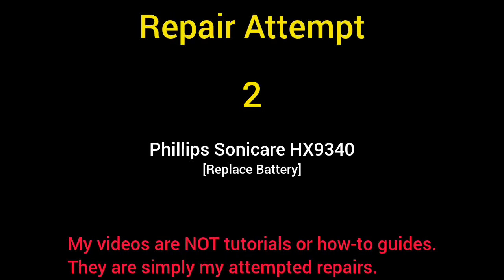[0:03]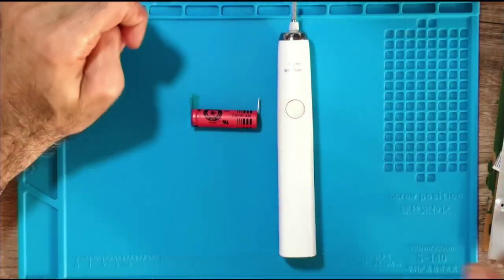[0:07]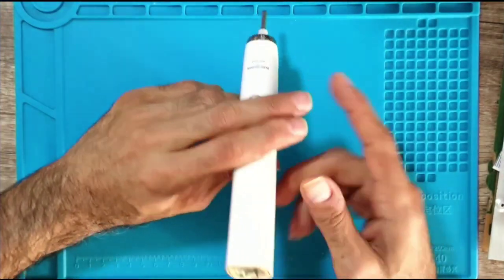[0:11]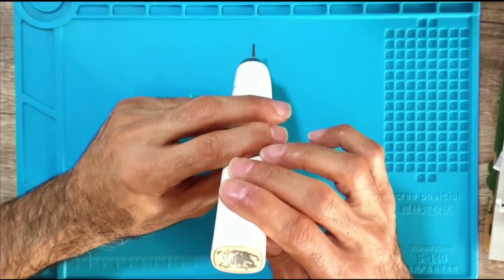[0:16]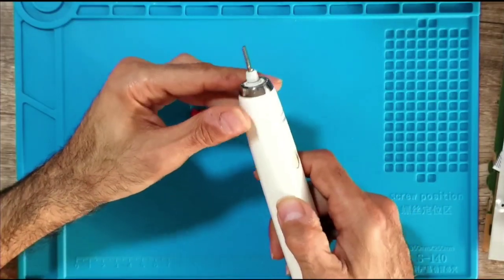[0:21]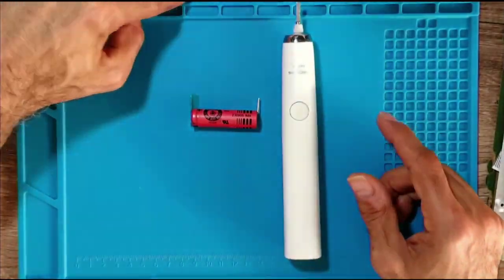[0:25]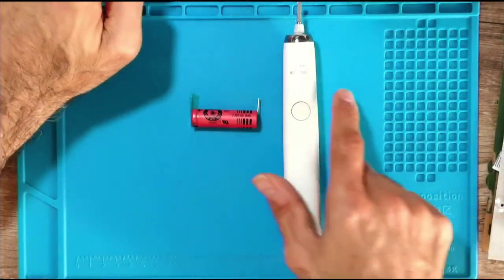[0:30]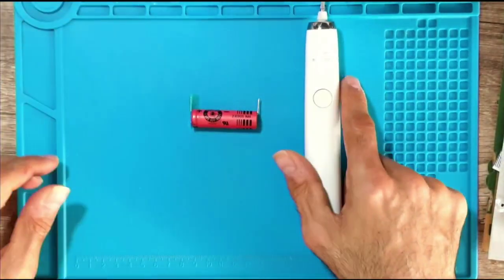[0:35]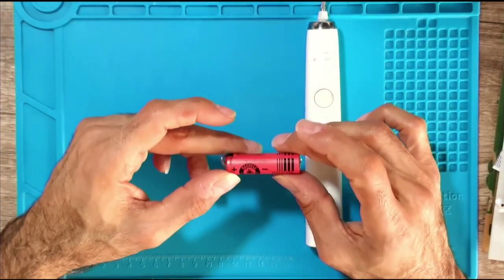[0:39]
I have a Phillips Sonicare model number HX9340, and it was given to me by a relative of mine. He said that in the past the battery would last about 4 weeks, and now it's down to 7 days to 10 days. So he purchased a new battery, and I'm going to replace it in this video.
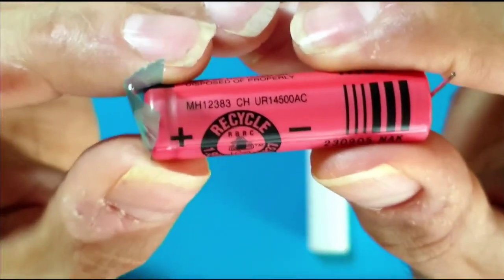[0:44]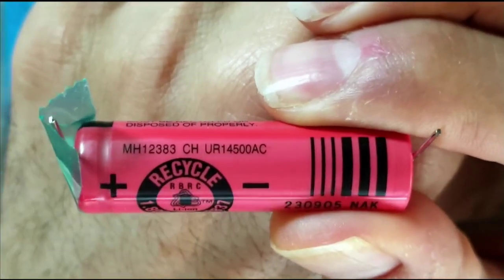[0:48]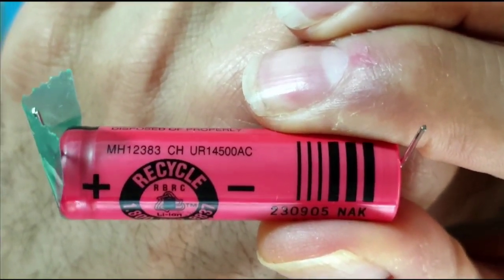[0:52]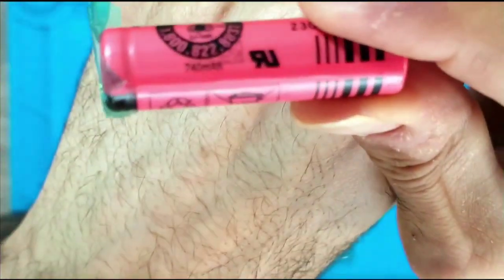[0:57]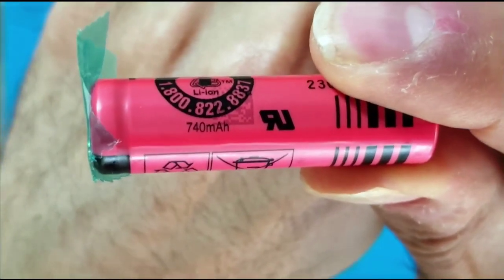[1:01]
This is the battery if anyone is interested. It's size 14500, and it's ~740 milliamp hour.
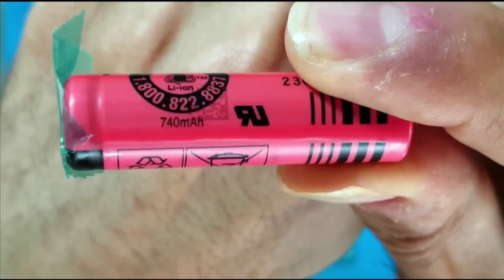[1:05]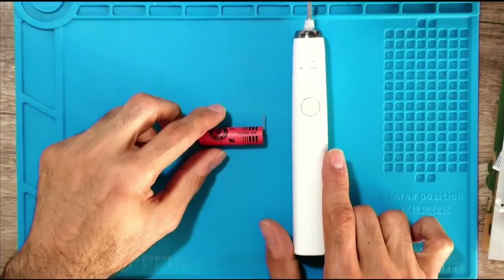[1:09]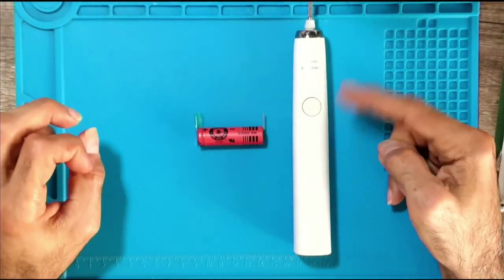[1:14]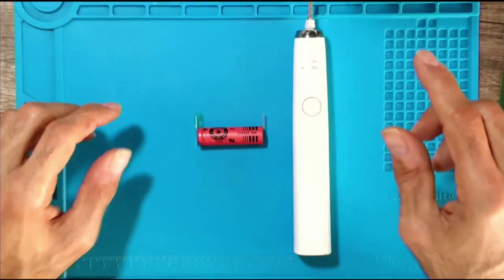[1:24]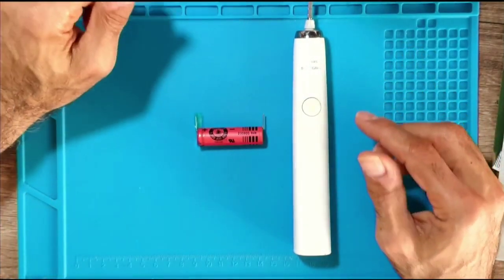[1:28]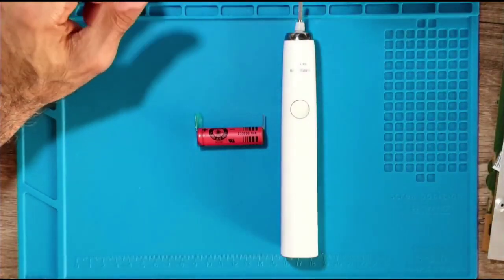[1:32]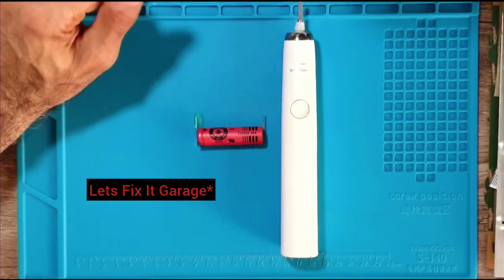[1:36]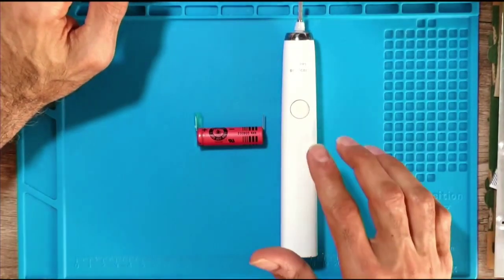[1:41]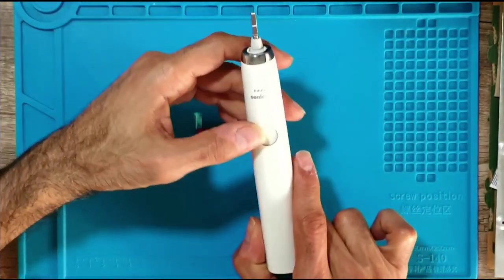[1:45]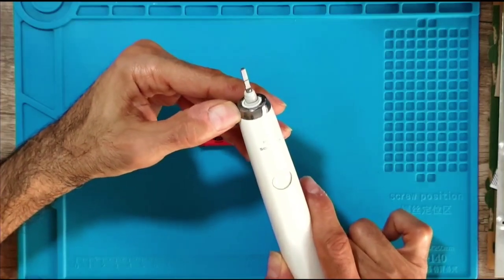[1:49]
Okay, to keep the video from becoming an hour long, I'm gonna open the toothbrush, remove the casing, and remove the motherboard. But I'll leave some links in the description to some very good channels that will help you with the opening process. There's a great channel called Let's Fix It Garage, and it has a wealth of information on Sonicare toothbrushes. If you're interested in doing any kind of maintenance or repairs, you should check it out. Like I said, I'll leave a link in the description.
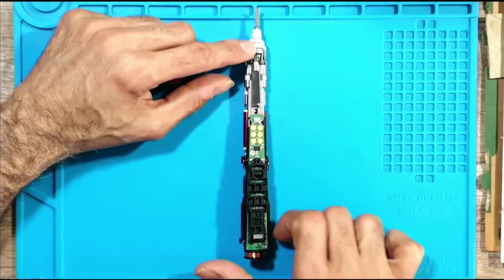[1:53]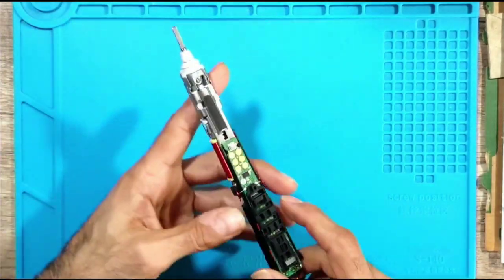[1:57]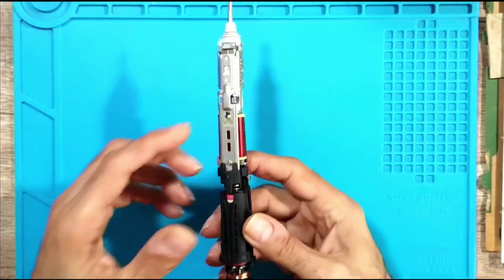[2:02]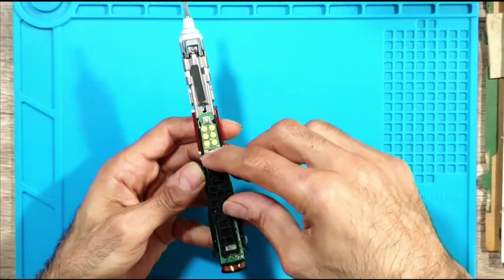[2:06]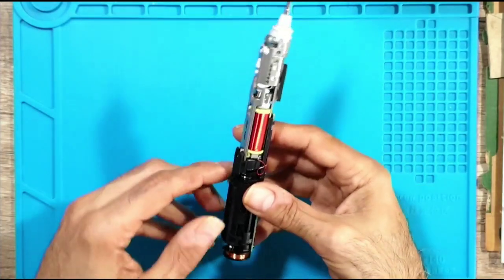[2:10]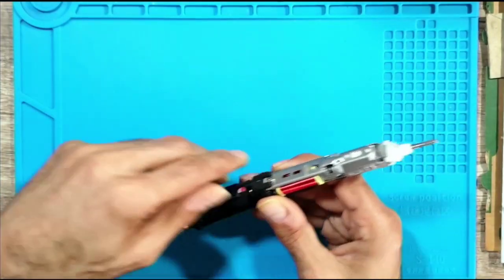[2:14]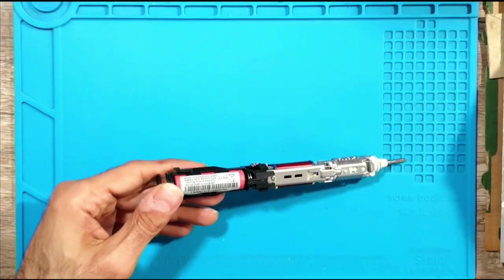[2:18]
So here we have the toothbrush. The board is here, this side, and on the other side there's the battery. So we're going to remove these two rubber, one on this side, one on the other side. There we go.
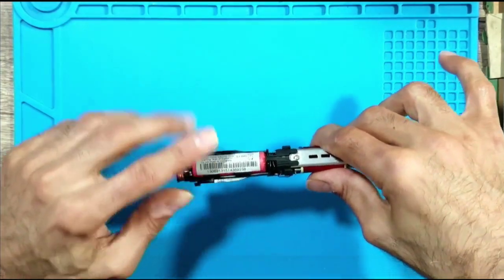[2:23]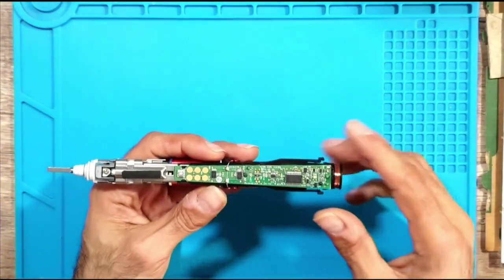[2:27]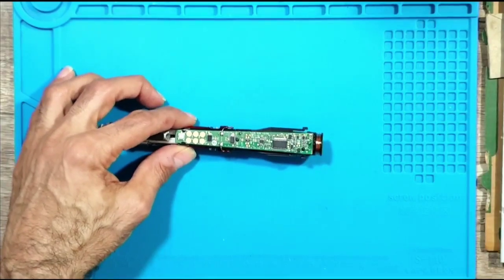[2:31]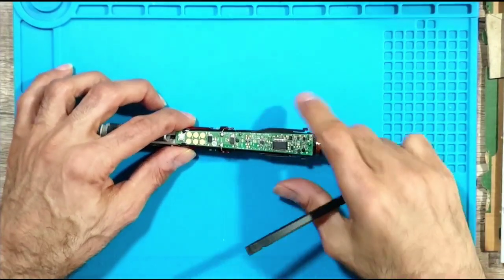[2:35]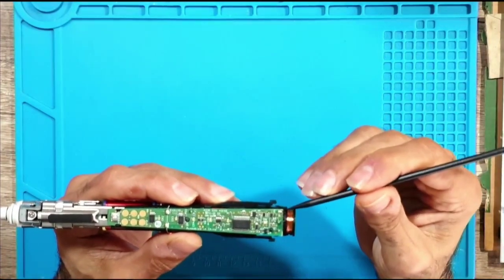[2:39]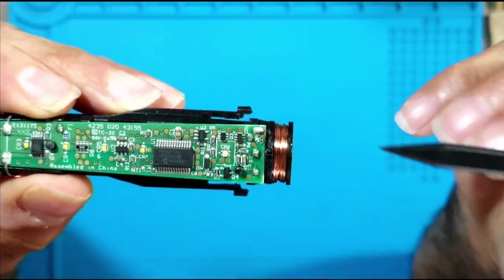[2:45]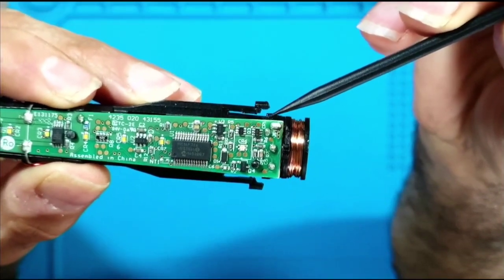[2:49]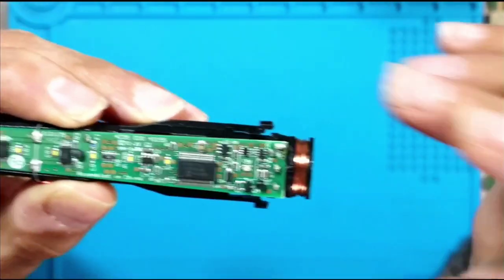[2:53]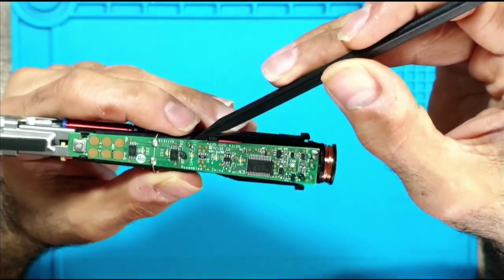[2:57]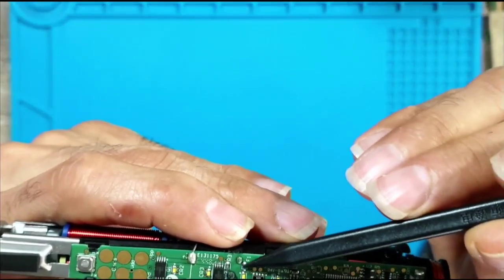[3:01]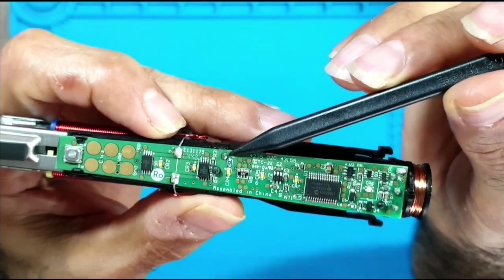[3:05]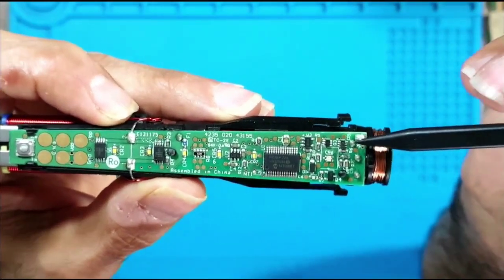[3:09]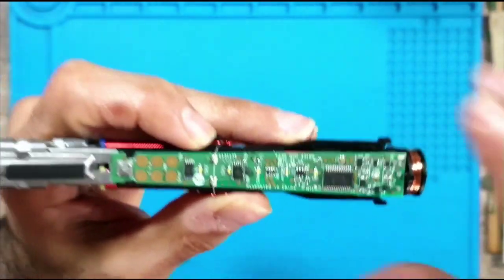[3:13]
Now the battery is soldered on the board, and there are 3 points that need to be desoldered. There's first this point here. This point here is like a switch. It disconnects the battery from the rest of the board. And then there are the battery terminals. One is here. I'll show you all this under the microscope, but for a bigger view, one is here and the other one is here. Okay, let me go under the microscope and we'll take a look at this.
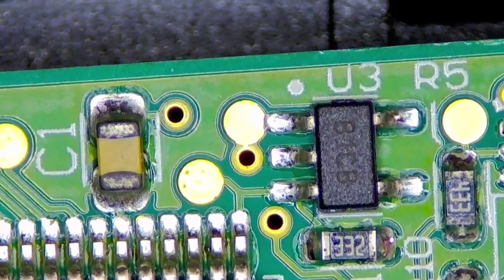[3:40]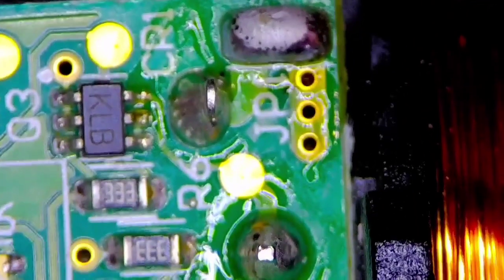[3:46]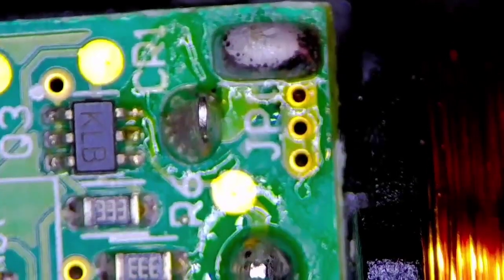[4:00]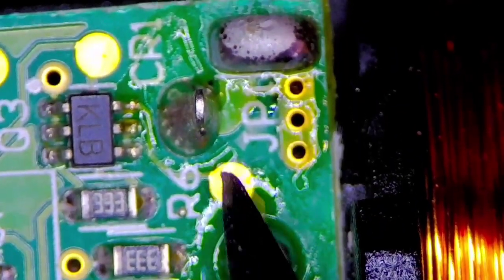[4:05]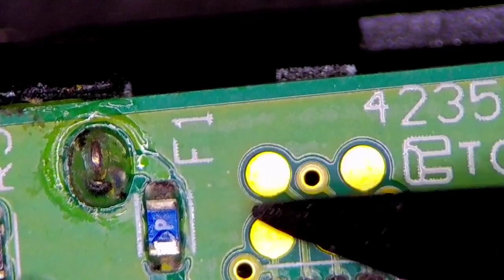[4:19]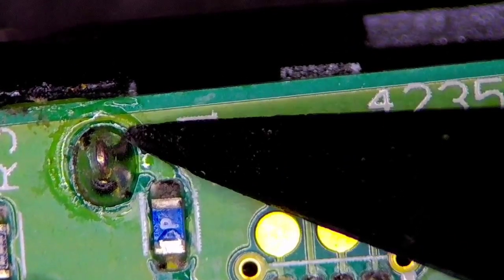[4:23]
Let me raise the microscope like this. There we go. So the first point I mentioned is here. It's JP1, jumper one. There are two pads, and when you remove the solder here, you disconnect the battery from the board. And then this here is one terminal of the battery, and the other one is, I'm gonna shift the toothbrush left. The other one is right here, right next to this fuse, the F1 fuse.
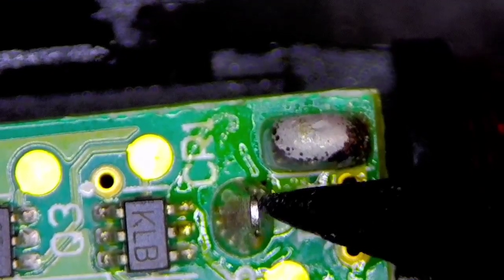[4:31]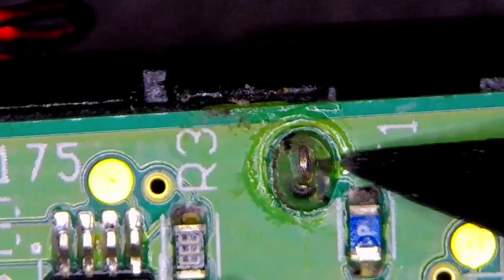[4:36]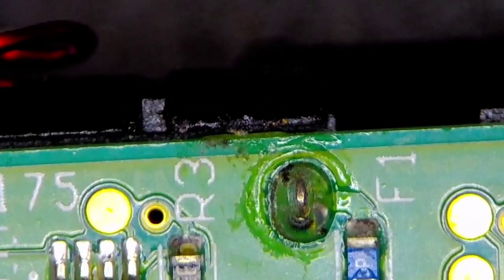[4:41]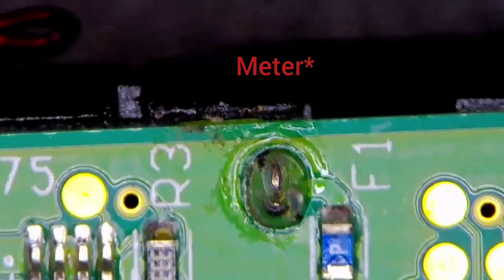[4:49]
So the first step is to desolder this jumper, and then this point and this point, so we can remove the battery and then replace it with the new one. I also recently acquired an internal battery resistance meter, so I'm going to run it through that and compare the old battery to the new one. Okay, so I'm going to start with desoldering this jumper.
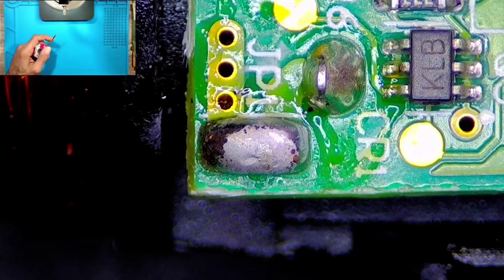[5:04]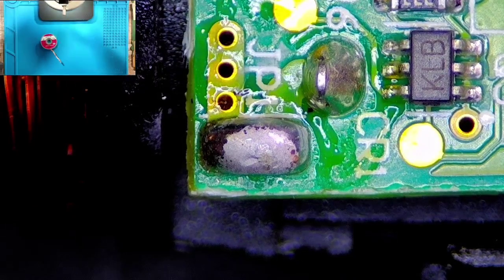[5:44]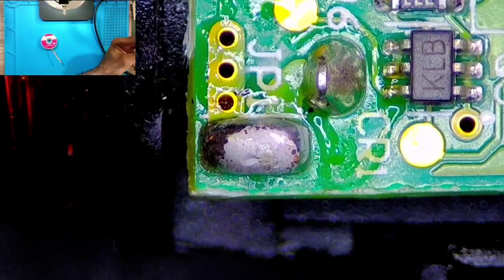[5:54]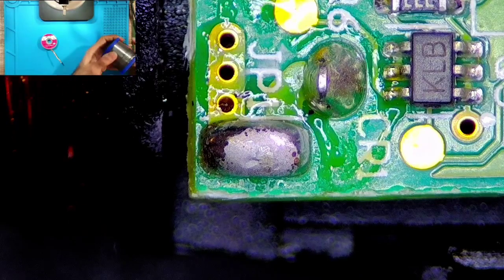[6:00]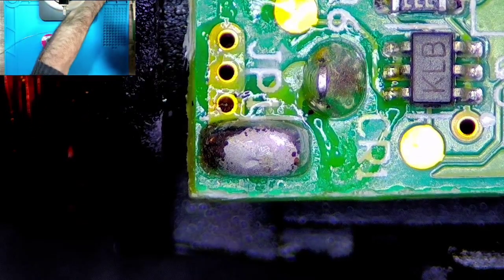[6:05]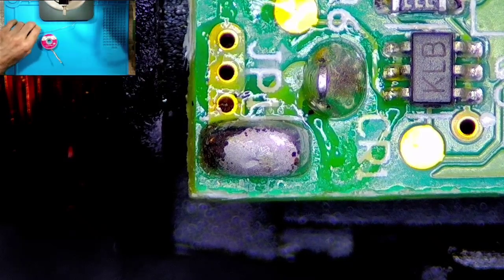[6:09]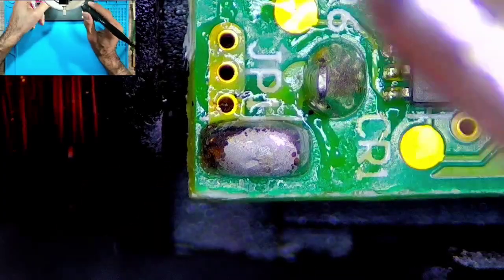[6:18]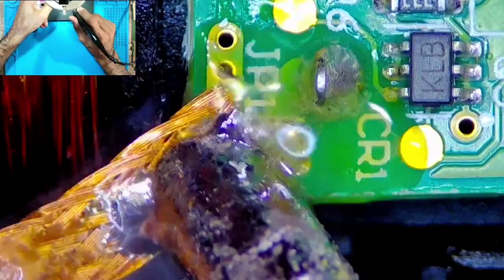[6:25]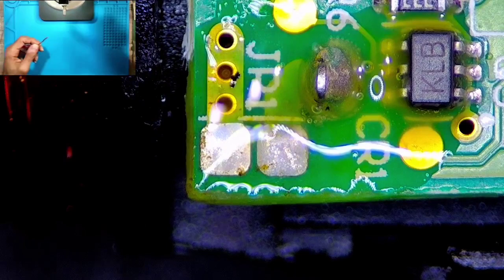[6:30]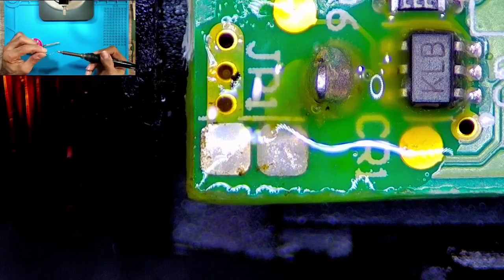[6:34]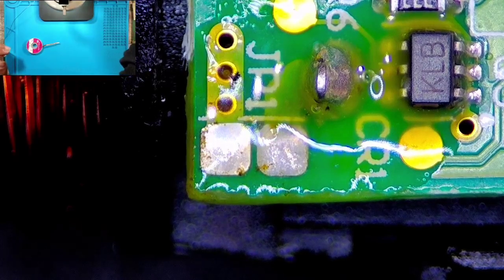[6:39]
Okay, so I'm going to use a bit of solder wick to clear that jumper. Let me put some flux on it. There we go. I think that's a bit too much, but that's okay. And I'm going to put my soldering iron to 330 degrees Celsius. Okay. Yeah, I think this is ready. Yep. Okay. So let's remove this blob here. There we go, that did it. Let me do a quick cleanup while the board is still hot.
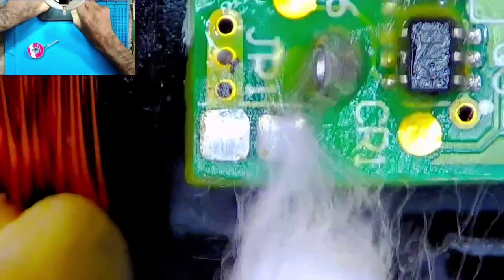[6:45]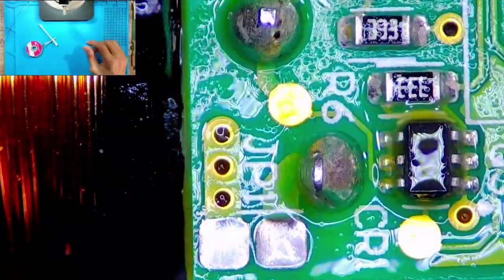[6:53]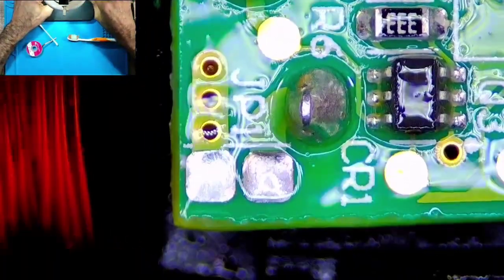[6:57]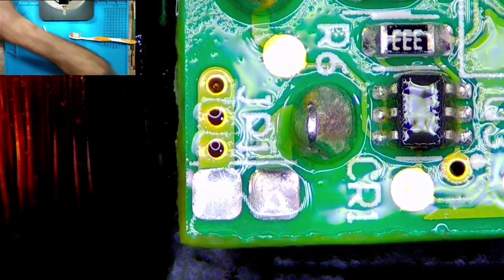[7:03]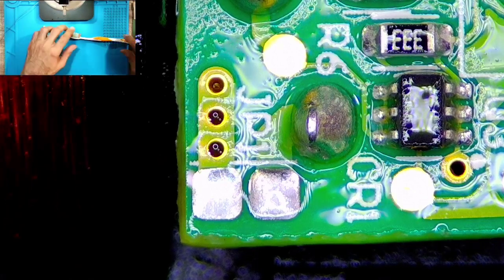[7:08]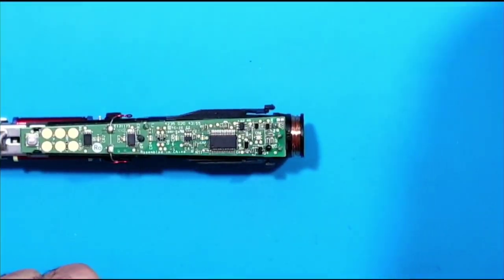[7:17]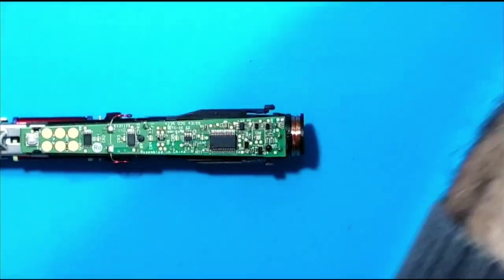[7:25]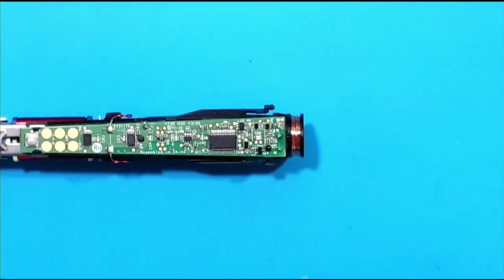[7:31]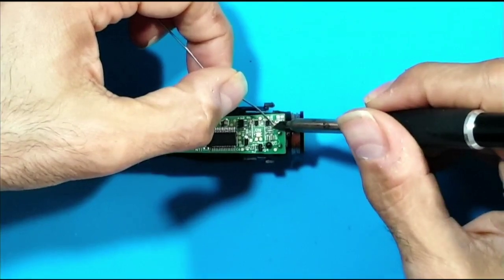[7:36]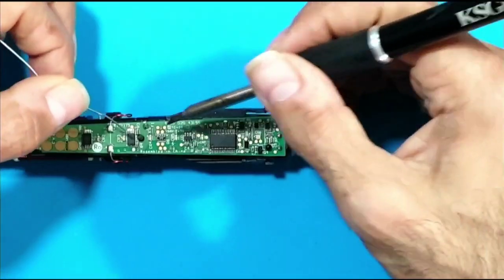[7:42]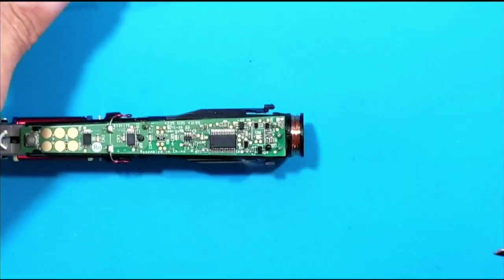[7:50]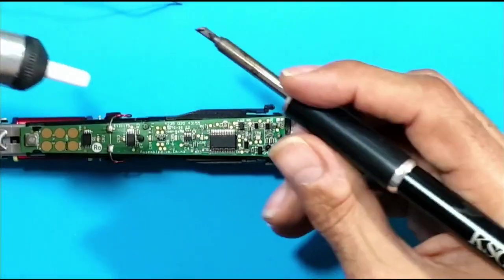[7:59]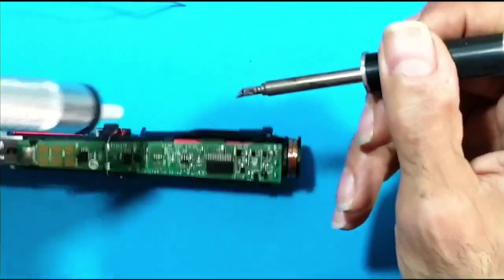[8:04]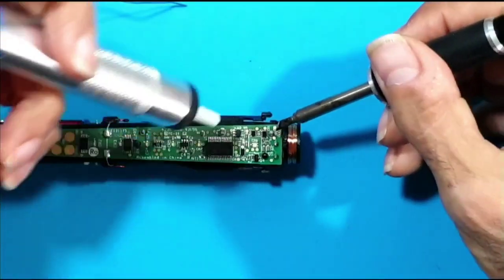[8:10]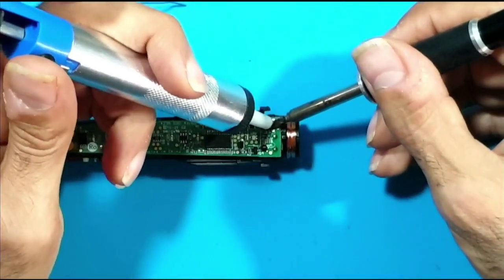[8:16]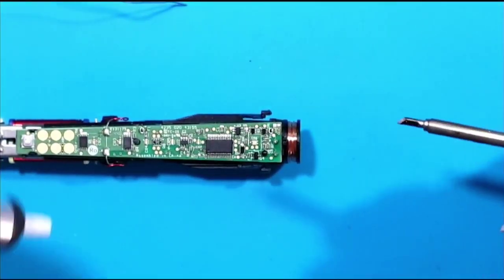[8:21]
Okay, so in the next step, I'm going to use the soldering pump. So I can't do that under the microscope. I don't have enough clearance. So I'll switch to the other camera. I'm going to start by adding a bit of fresh leaded solder on both terminals. There we go. That's one. That's the other one. Okay, that's looking good.
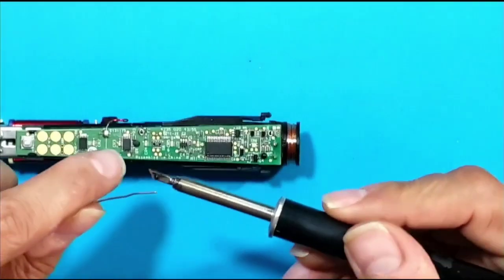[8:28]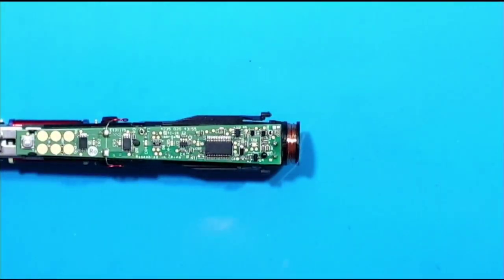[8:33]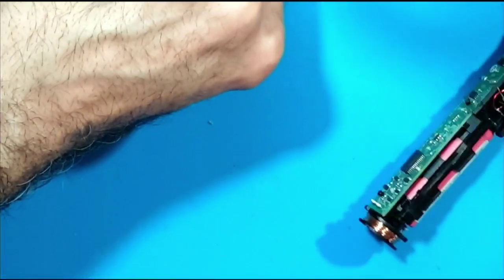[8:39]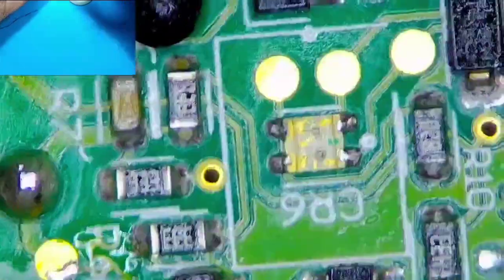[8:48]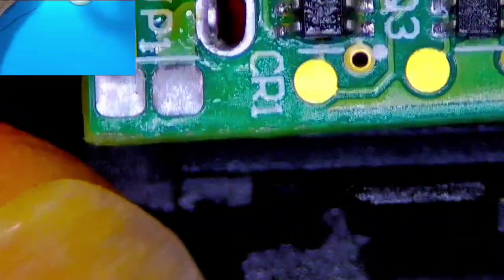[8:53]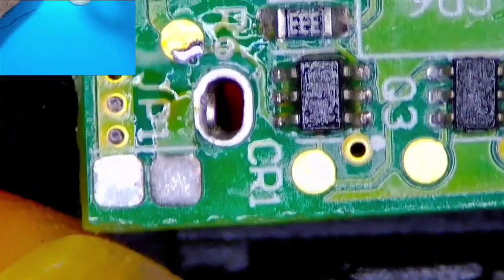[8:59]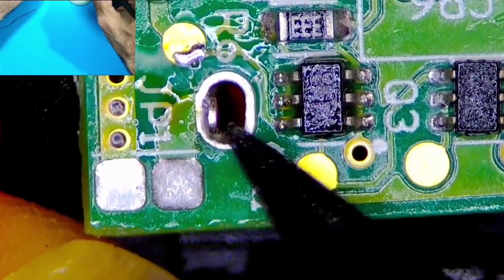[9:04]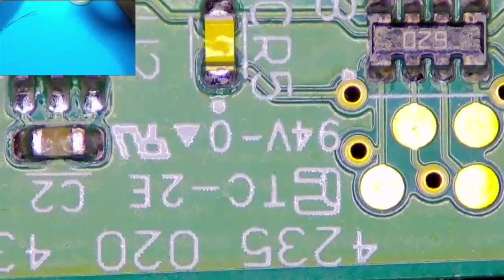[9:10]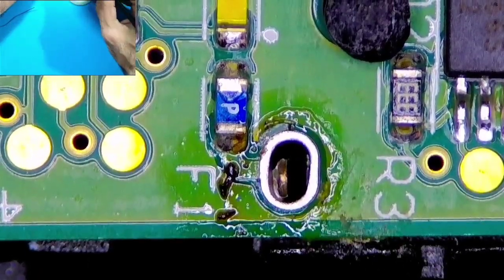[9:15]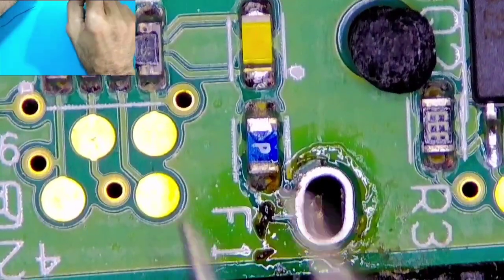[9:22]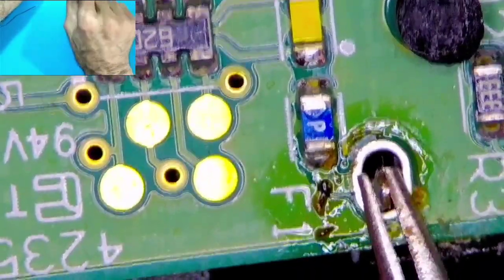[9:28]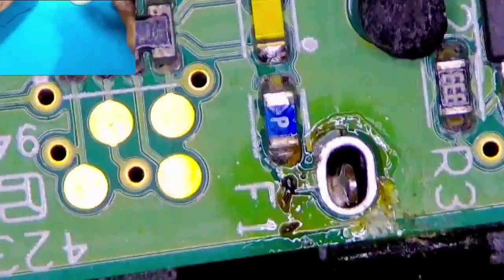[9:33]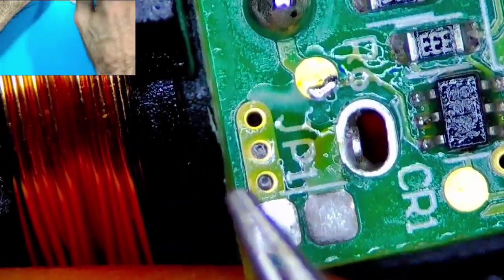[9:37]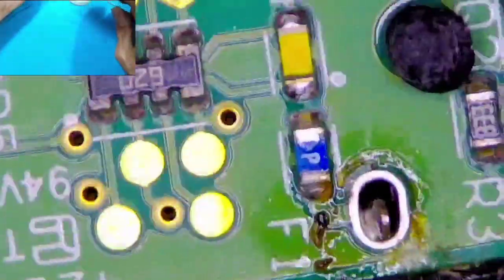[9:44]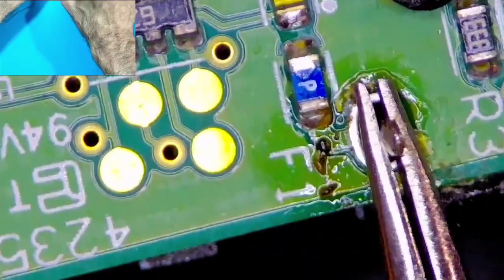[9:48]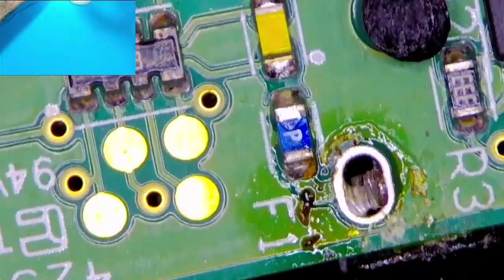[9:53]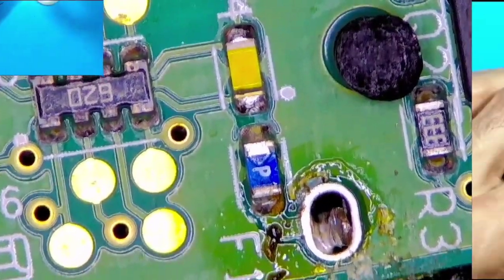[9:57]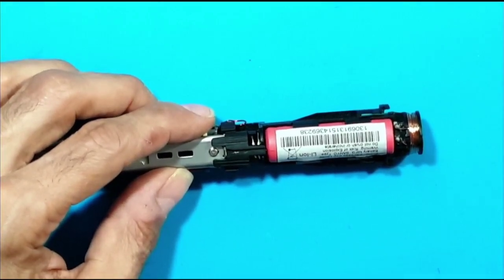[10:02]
Let me show you under the microscope. Bring the microscope in. So this here is the jumper that we cleared. This is one pin of the battery. And where's the other one? And here's the other end. Let me just see if they're loose enough. I think that's loose enough. Let me check the other one. Yeah, this one is definitely loose. Let me just try and loosen this one a bit more. Yeah, I think that's loose. So now hopefully I can remove the battery. Okay, let's see here.
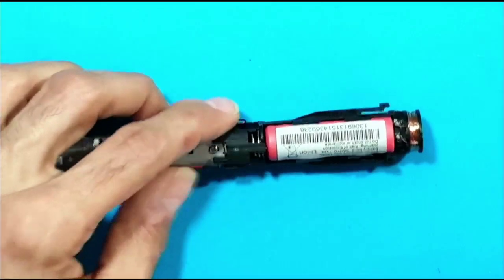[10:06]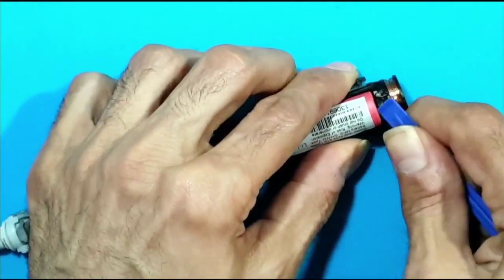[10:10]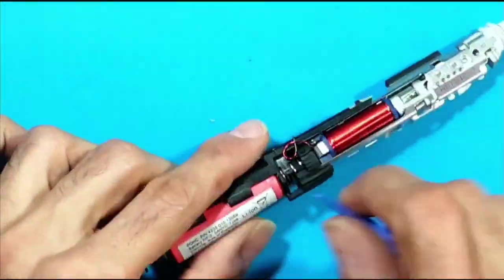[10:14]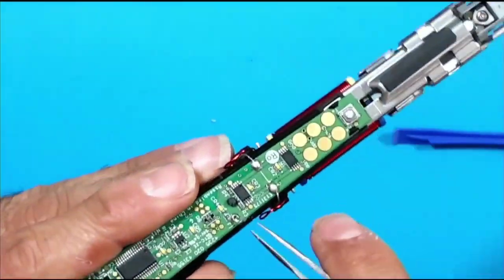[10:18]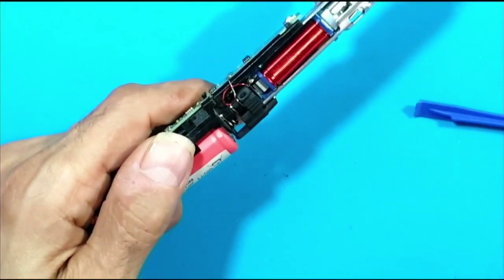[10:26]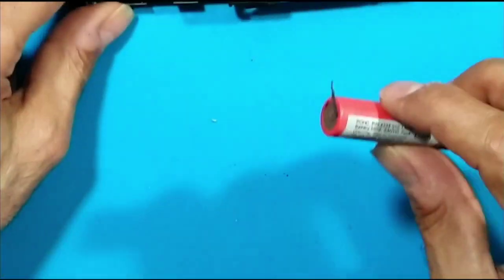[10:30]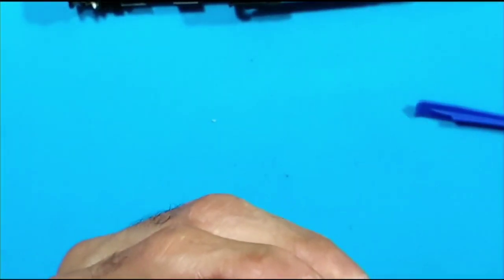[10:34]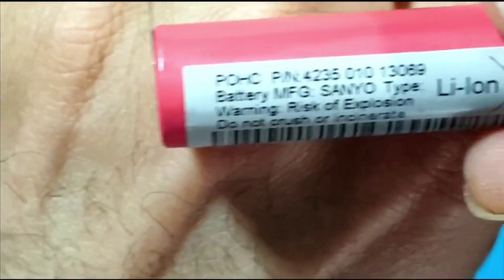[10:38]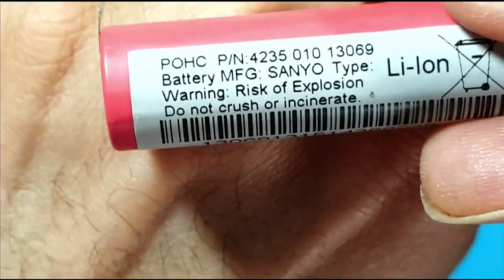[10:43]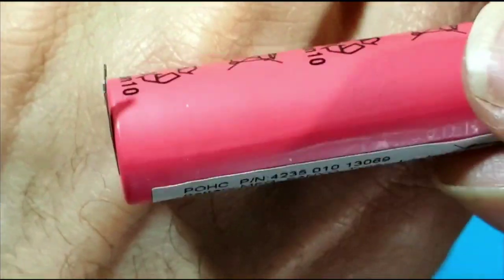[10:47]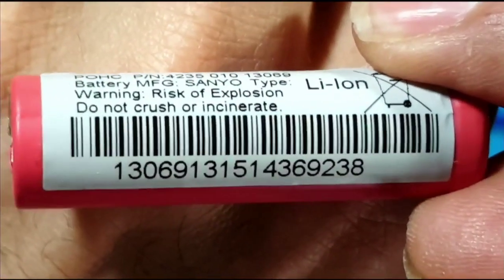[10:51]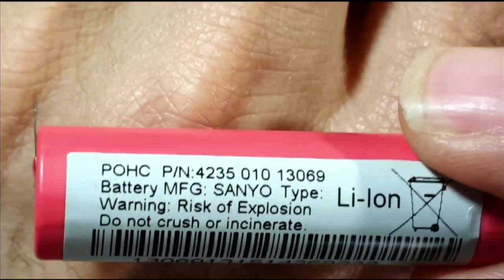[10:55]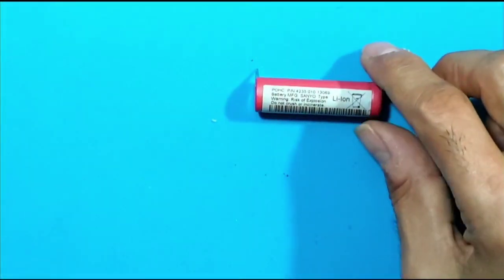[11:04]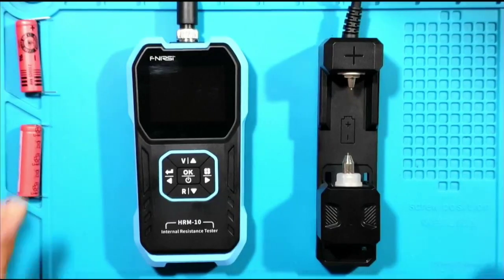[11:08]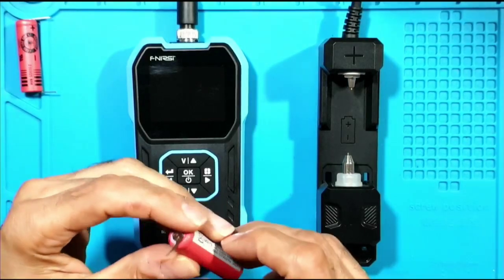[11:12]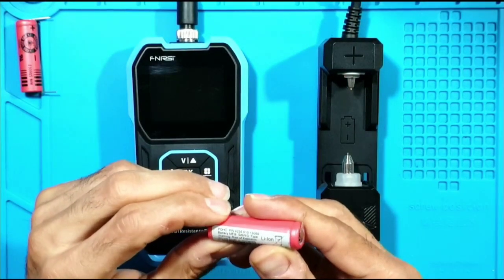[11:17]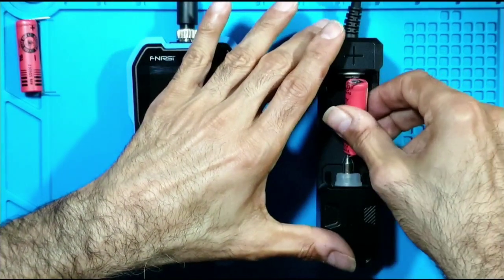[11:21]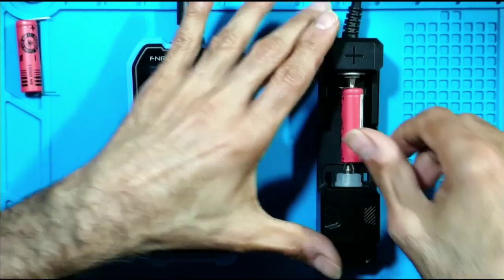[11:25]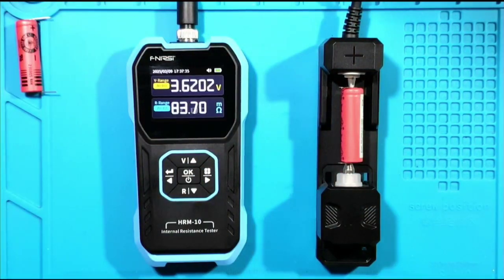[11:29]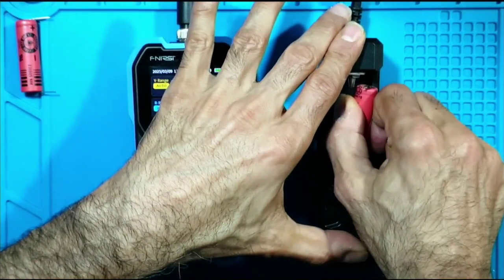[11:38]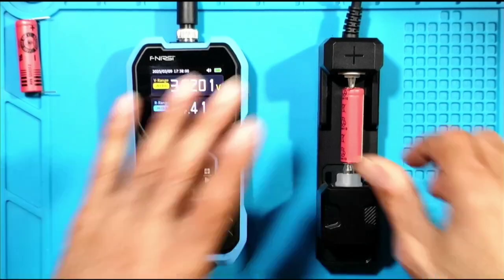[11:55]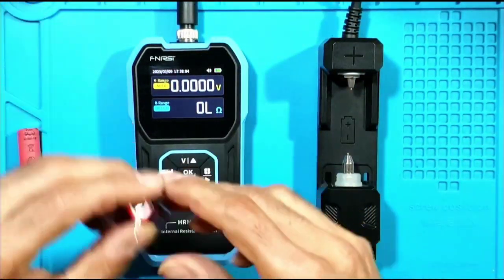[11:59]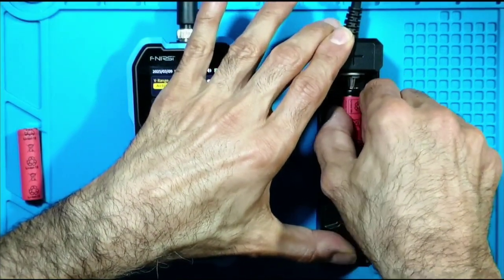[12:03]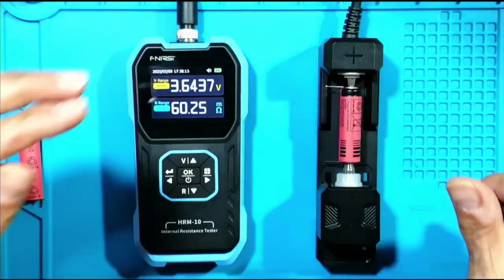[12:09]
Wait, I need to capture this screen. Okay, 84.3. Let me capture it. Okay. And then let's measure the other one. 84.4. And the new battery is 60. So I would say that's a reasonable difference. I think the 20 milliohm makes a difference here. Okay, let's proceed with installing the new battery.
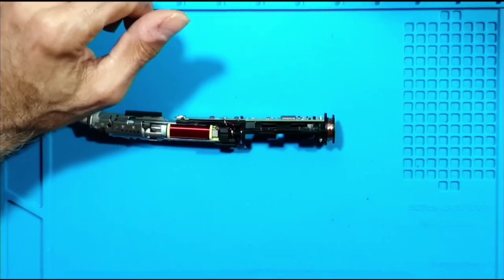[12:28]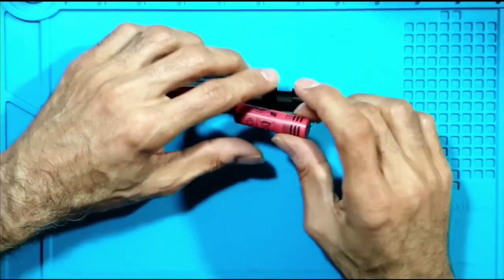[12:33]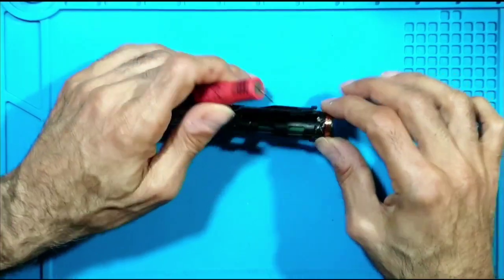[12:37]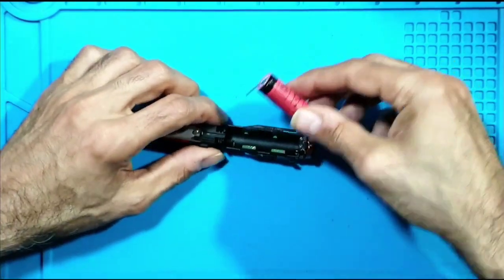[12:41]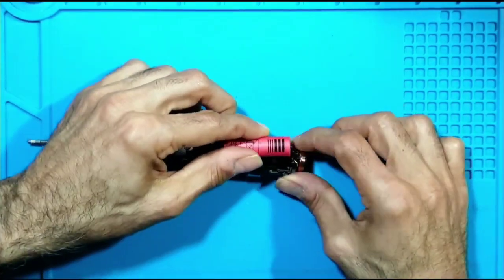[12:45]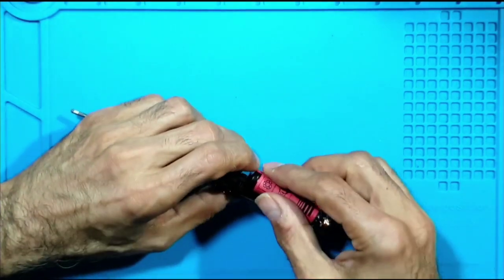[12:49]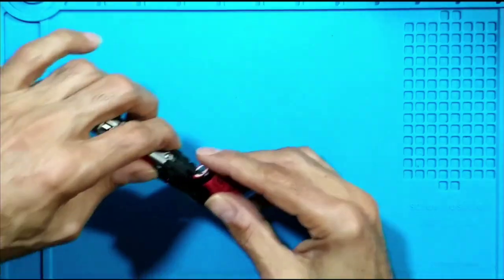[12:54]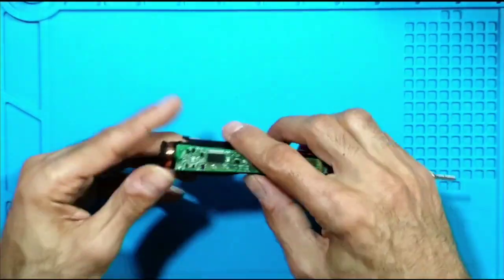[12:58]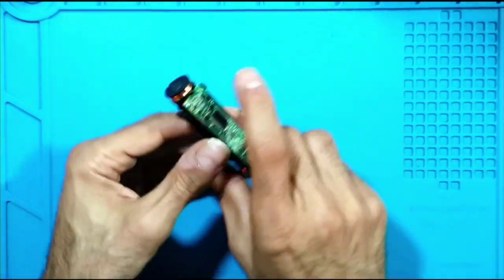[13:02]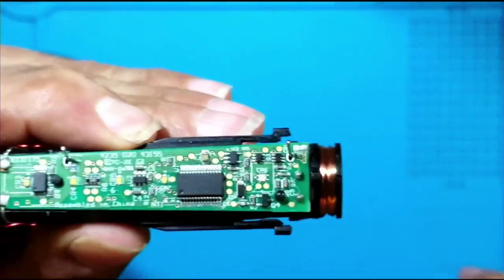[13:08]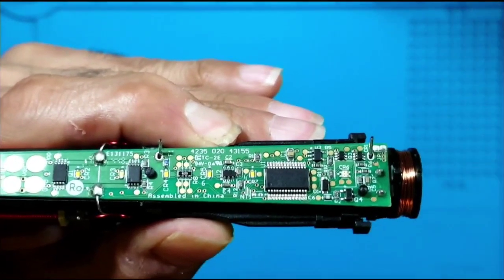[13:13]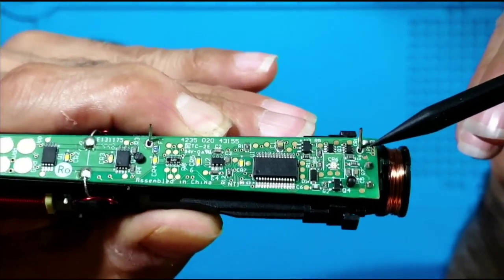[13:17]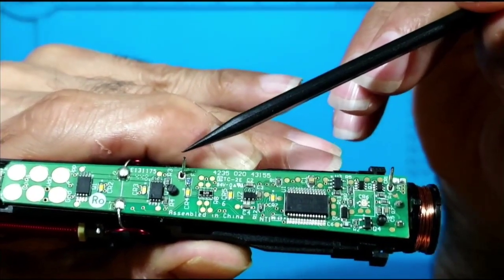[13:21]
I'm gonna put the battery back in. The negative side goes on the bottom where the charging coil is. So here we go. Just trying to get the pins to go through the hole. Okay, one side is good. You see the other side? There we go. Okay, so the battery is fully seated now. You can see the two terminals. This is the negative pin, and this is the positive pin.
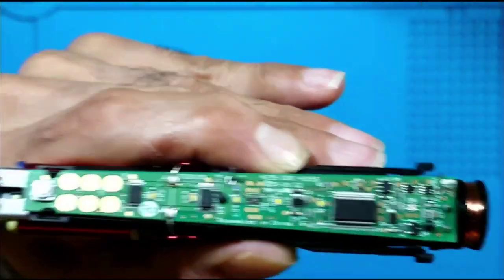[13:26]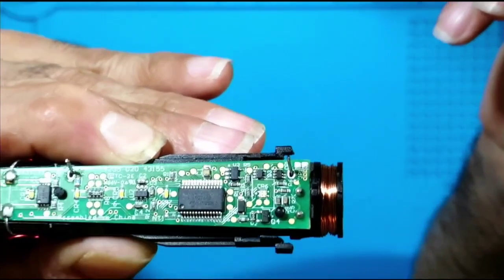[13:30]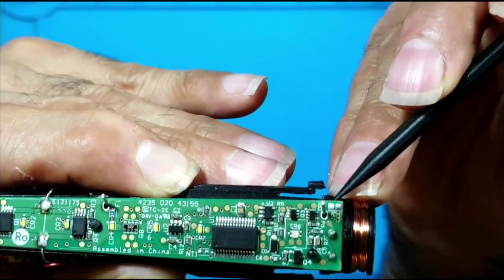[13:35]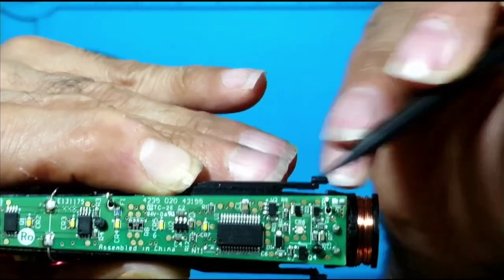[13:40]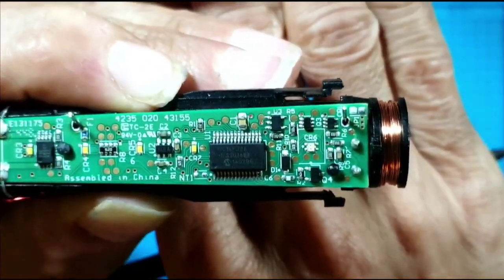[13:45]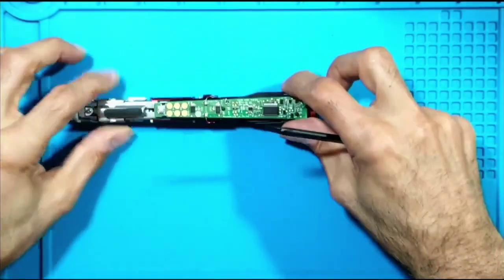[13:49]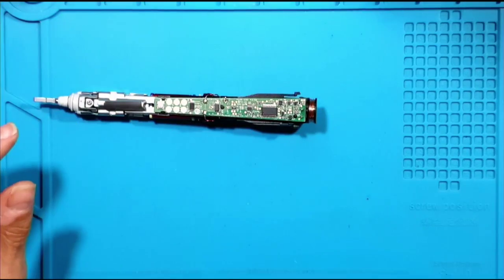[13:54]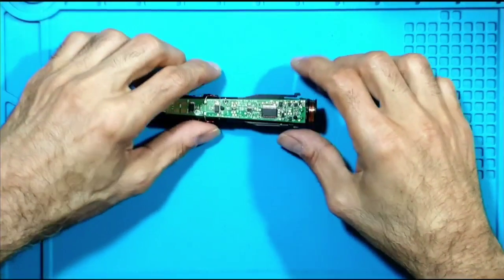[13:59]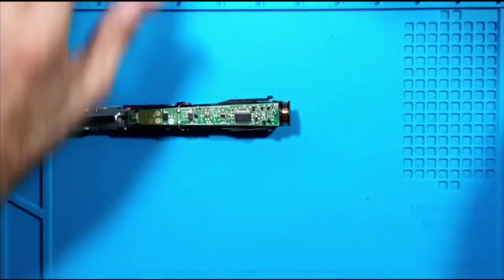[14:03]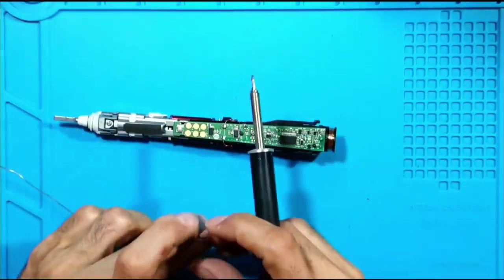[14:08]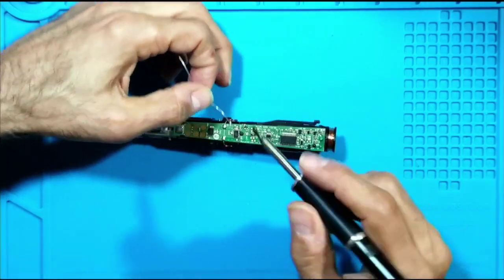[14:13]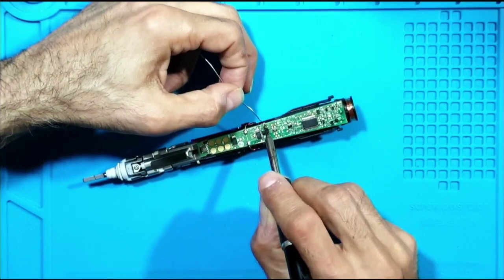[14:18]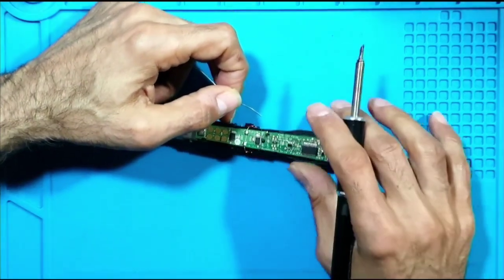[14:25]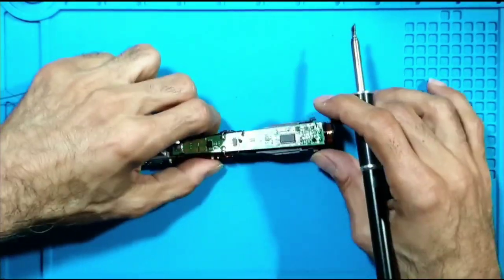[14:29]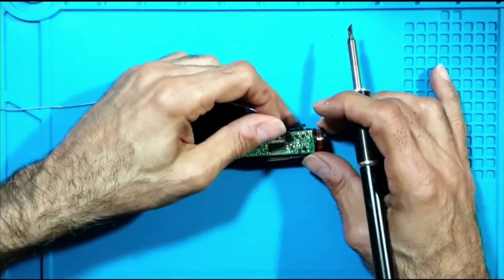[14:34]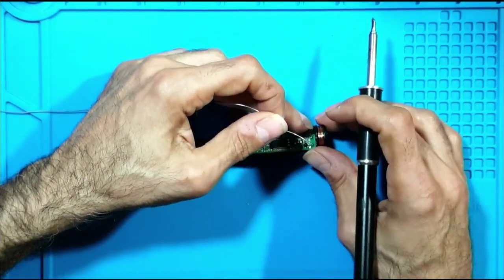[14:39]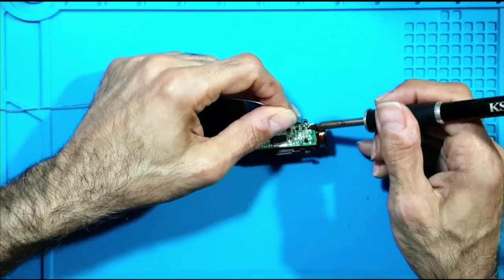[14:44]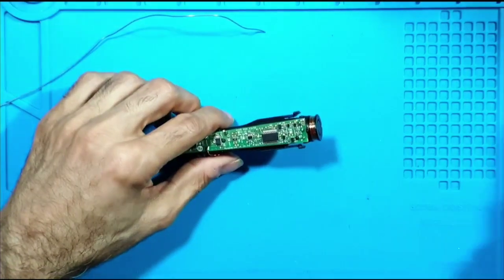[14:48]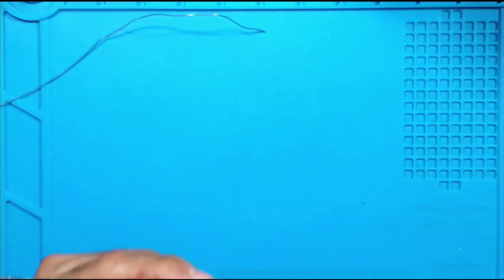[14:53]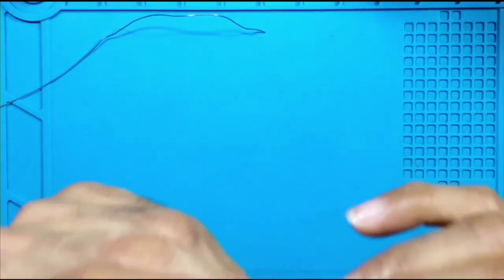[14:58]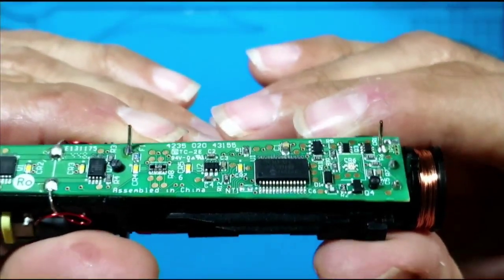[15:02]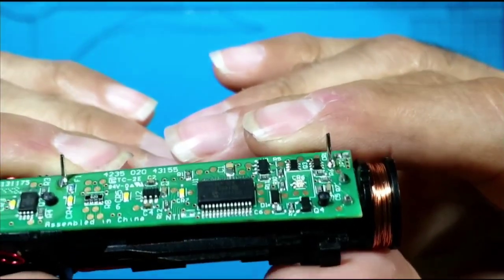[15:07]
Now I'm just going to solder them in, followed by closing the initial jumper that I desoldered. I'm going to just put a blob to reconnect the two points. Okay, here we go. Turn on my soldering iron. That's pin one, the positive end. Now I'm going to do the negative end. I'll show you under the microscope once I bridge the jumper.
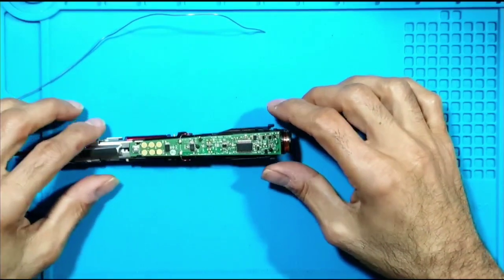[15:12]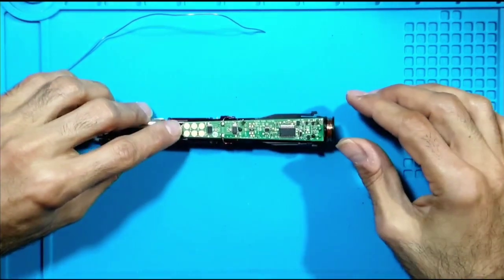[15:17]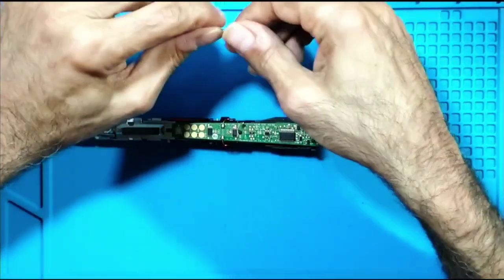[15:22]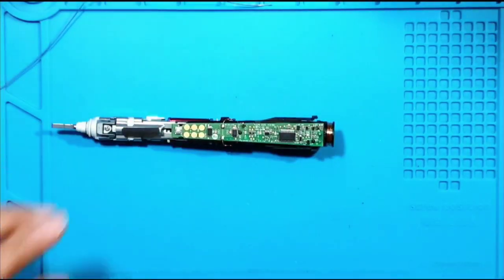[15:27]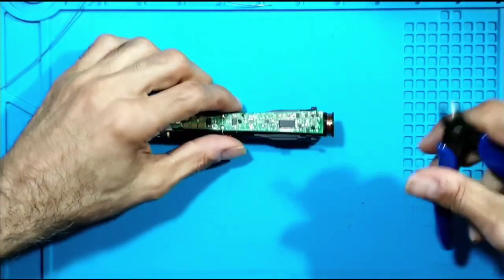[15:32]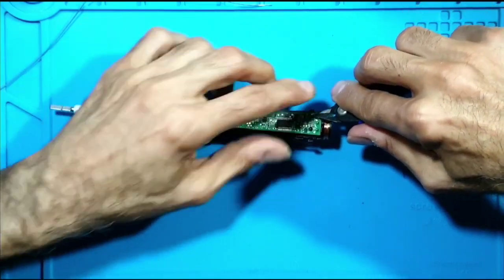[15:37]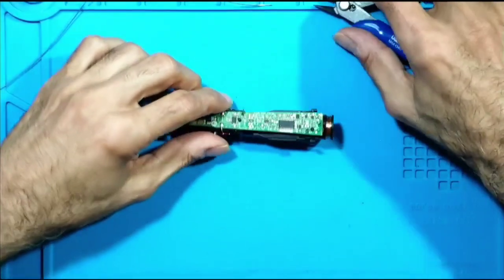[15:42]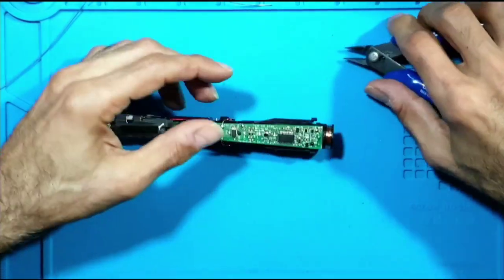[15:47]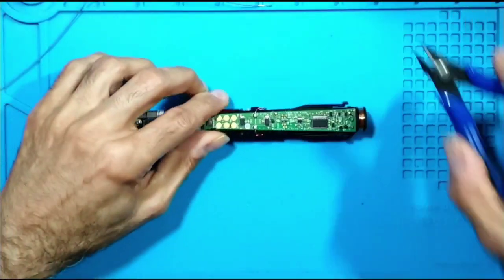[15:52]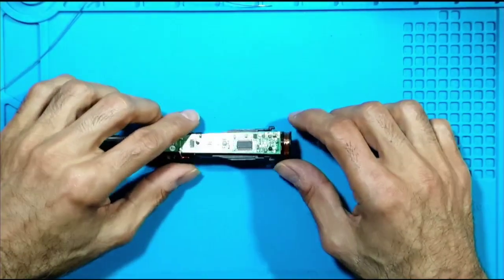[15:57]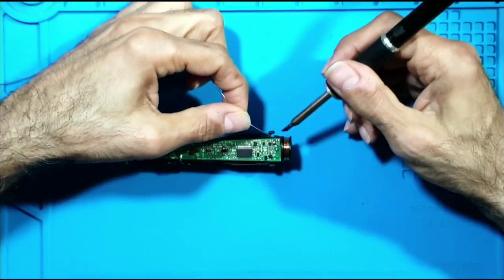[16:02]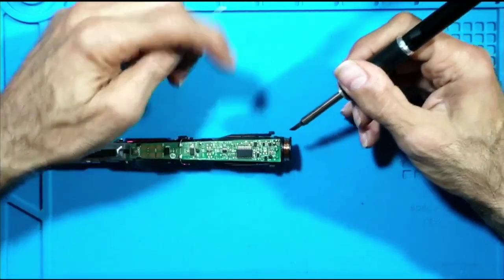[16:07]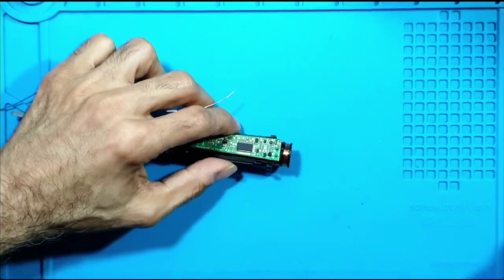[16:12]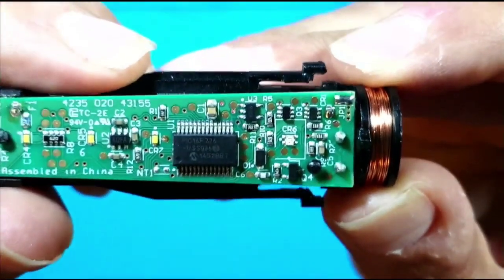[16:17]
Okay. So right now, if I press the on button, nothing will happen. Yeah, I just pressed it, nothing is happening. Okay. Let me bridge the. Actually, let me cut the leads. Okay. And the other one. Okay, now I'm going to set the jumper. And I think that did it. Yeah, looks good. Let me show you under the microscope.
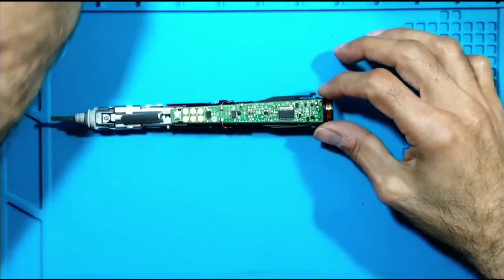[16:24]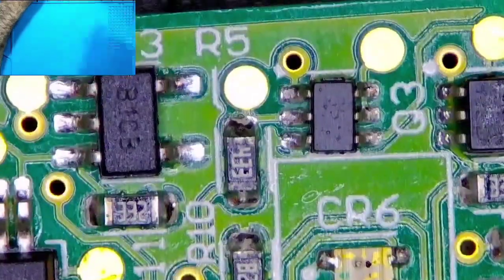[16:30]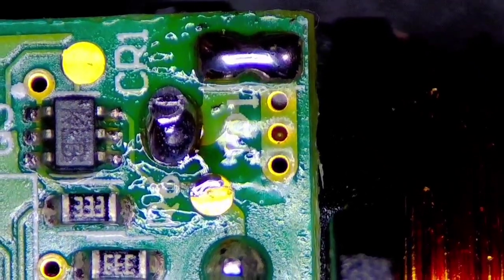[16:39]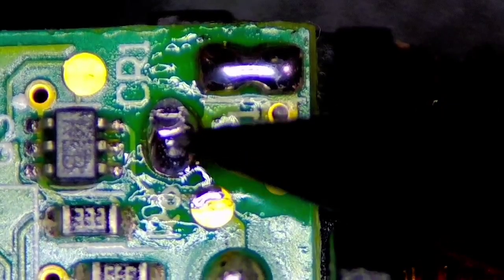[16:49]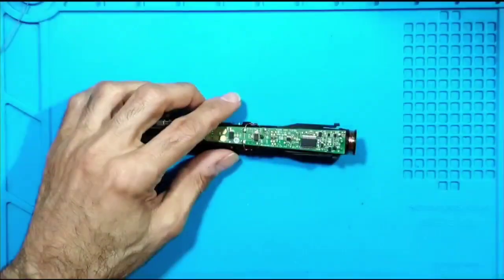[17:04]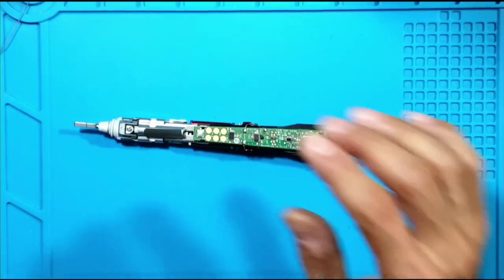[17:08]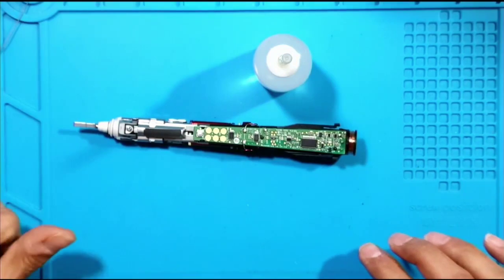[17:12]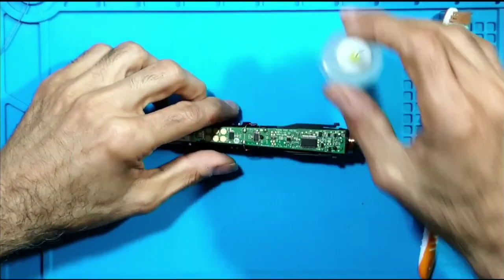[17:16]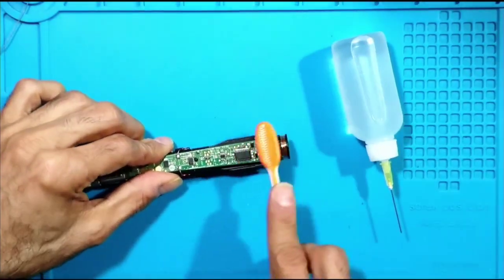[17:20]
There we go. So this is the jumper, and this is the negative terminal, and the positive terminal is right here. Let me do a quick cleanup. Where's my toothbrush? Here, there it is.
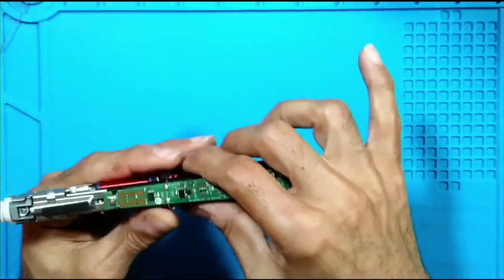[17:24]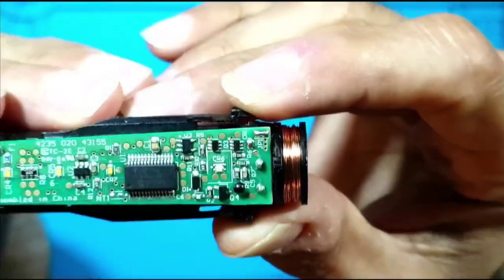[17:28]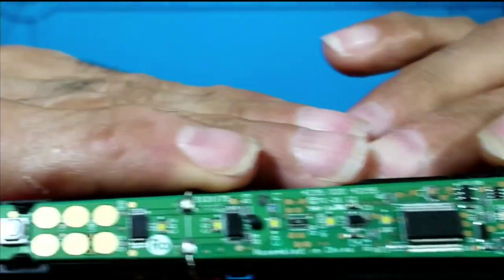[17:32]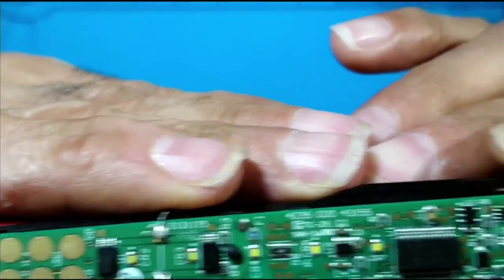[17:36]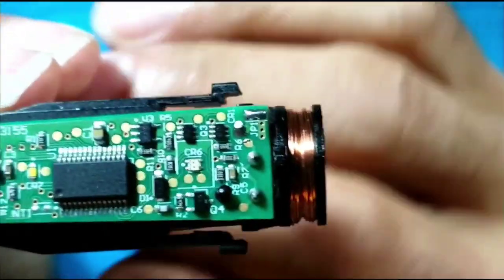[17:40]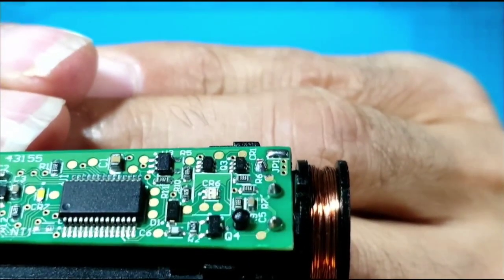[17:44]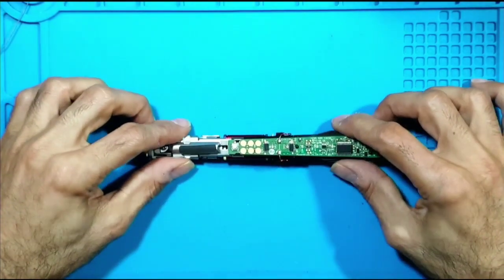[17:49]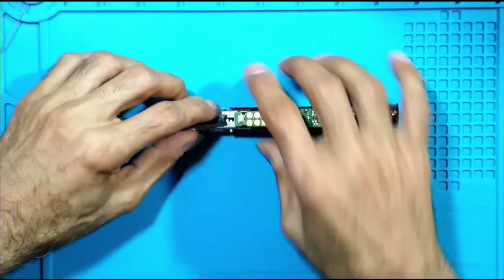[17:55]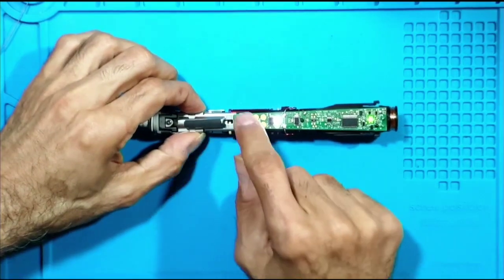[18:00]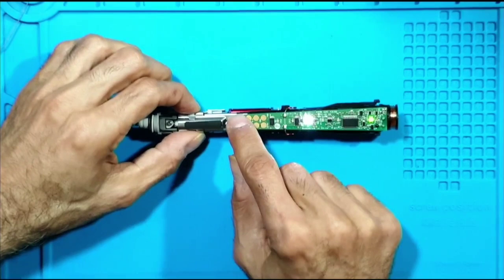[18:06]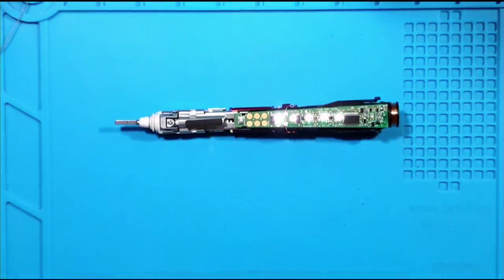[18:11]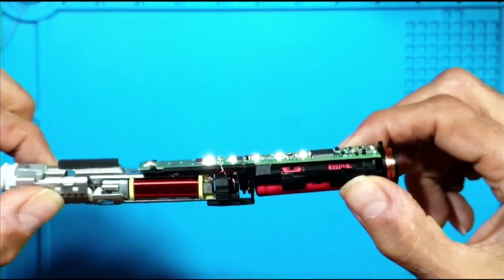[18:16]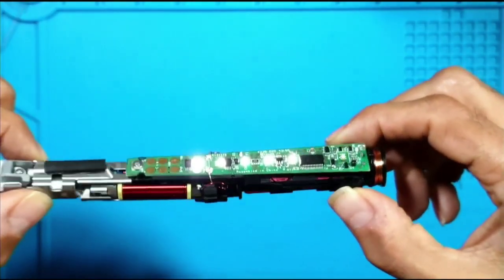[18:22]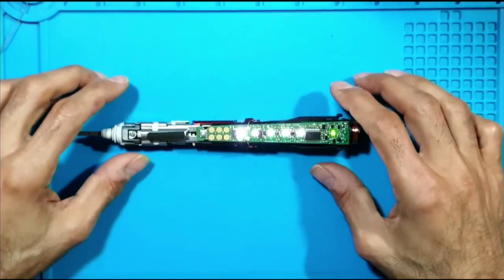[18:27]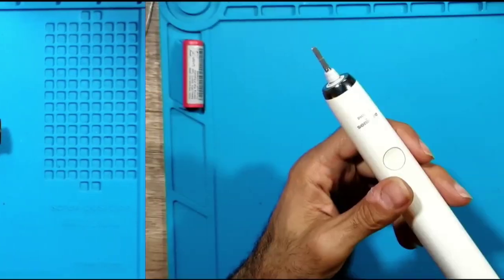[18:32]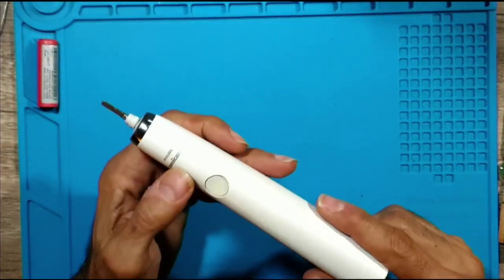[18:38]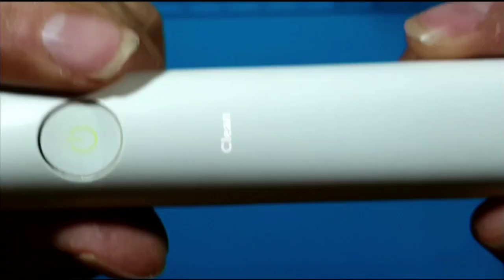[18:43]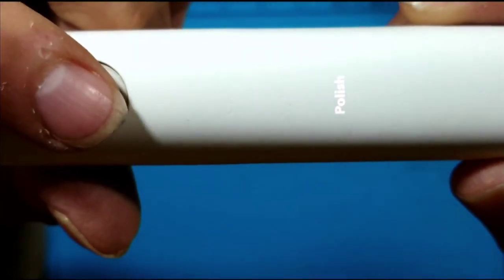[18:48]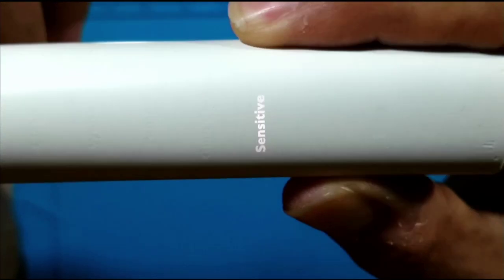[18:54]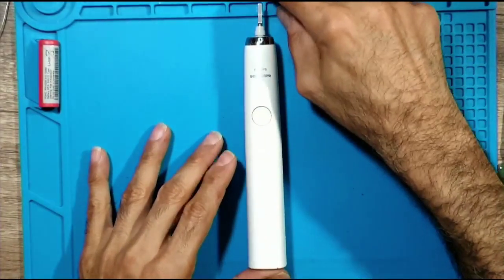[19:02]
Okay, let's give it a quick test before we insert it into the casing. Yeah, we're good. And there we go. These are the LEDs. Okay. I'm going to put it back into the case, and then we'll do a final test. Okay, here we go. Fully assembled. Final test. Clean. So there we go, brand new battery. Hopefully that'll last him another 4 or 5 years easily.